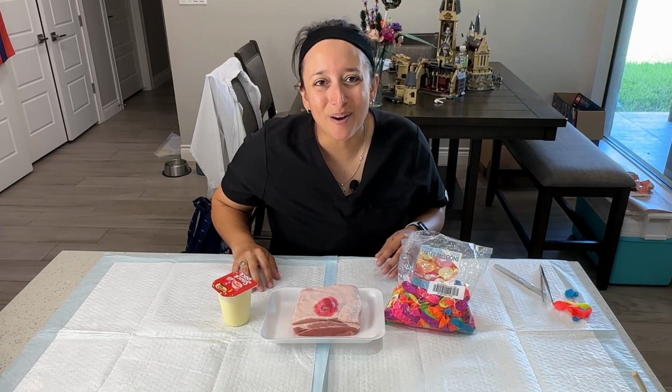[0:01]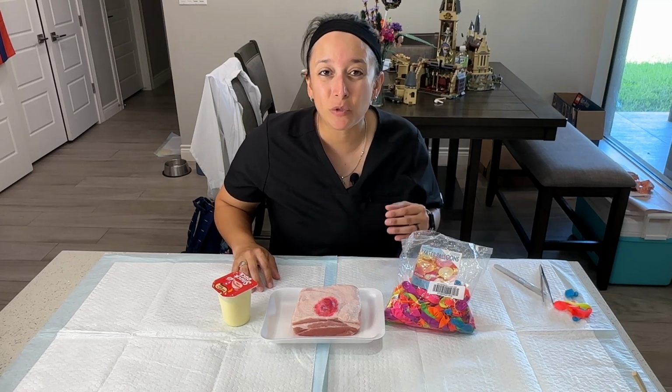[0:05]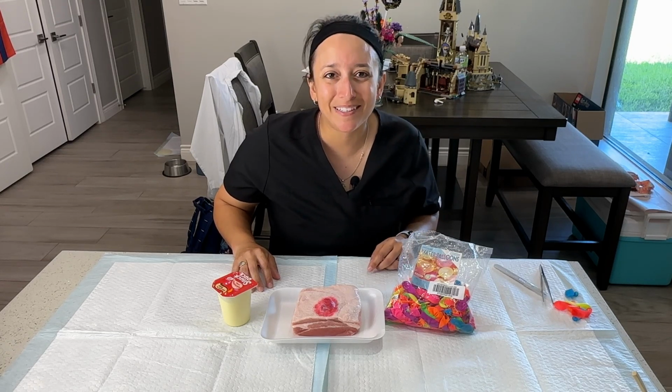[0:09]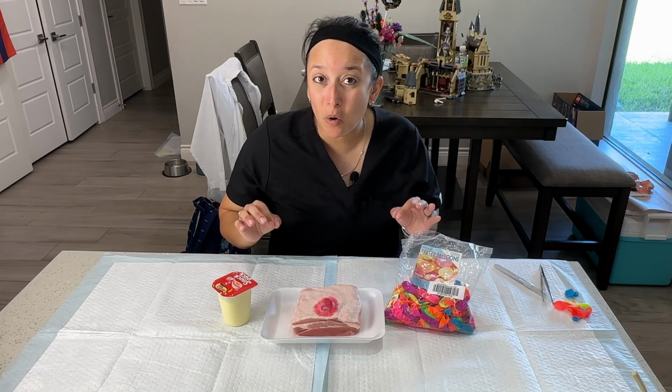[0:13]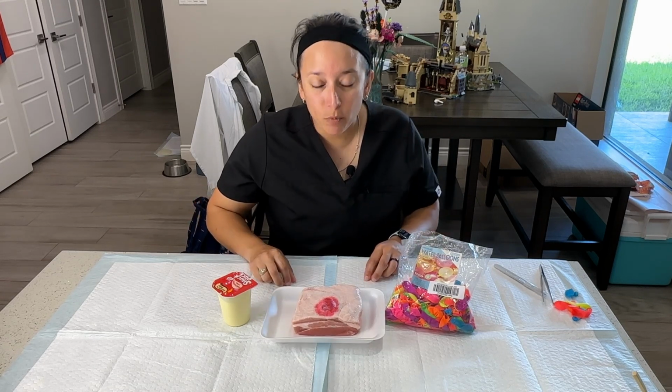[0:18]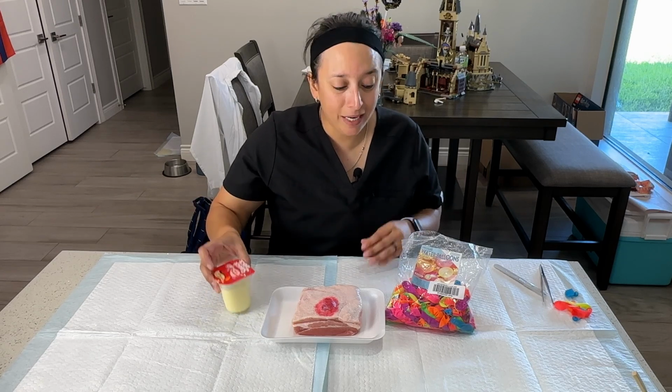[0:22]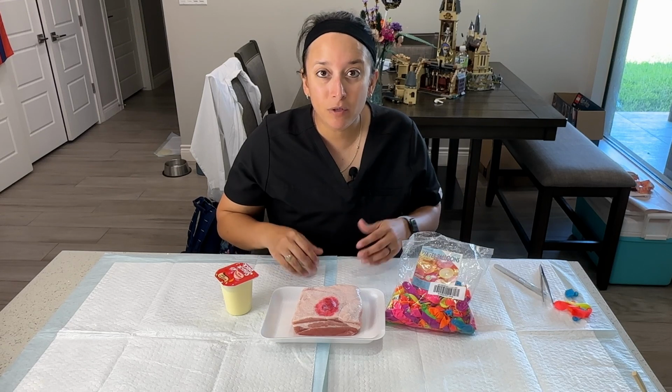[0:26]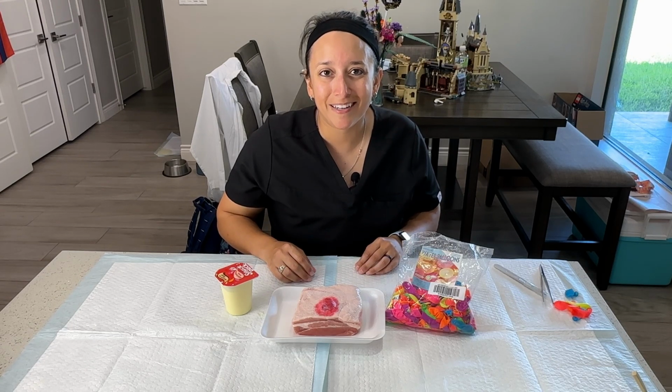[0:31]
Now, in today's video, we're gonna show you how to make your very own do-it-yourself abscess. And really all you need to do it is a pork skin, some pudding, some water balloons, a few other things that we'll show you. And you can essentially make one at home so you can practice your incision and drainage technique. So stay tuned and we'll show you how to do it yourself.
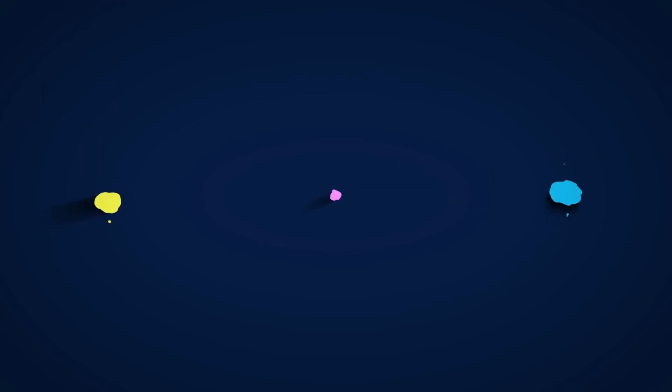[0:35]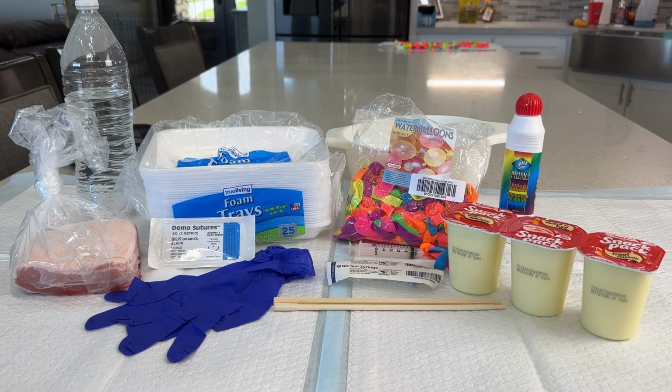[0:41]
All right, so the materials that you're gonna need to make your very own do-it-yourself abscess are going to be what we see here. So here on the left-hand side, we see the pig skin. This is what we're gonna need to act as our fake human. We have some water. That's what we're gonna be adding to the pudding to make pus. We need some gloves when we handle the pork product. We have some demo suture to close off the pocket we make in the pork skin.
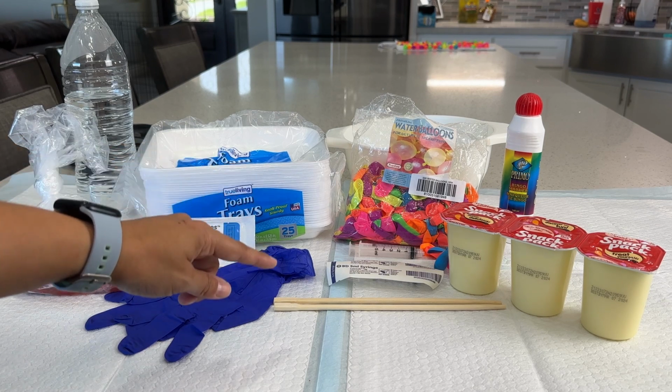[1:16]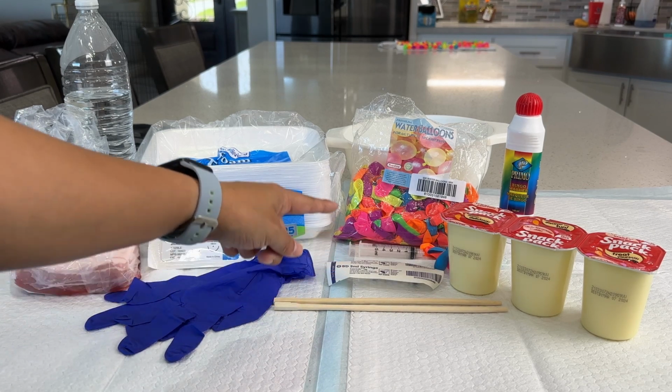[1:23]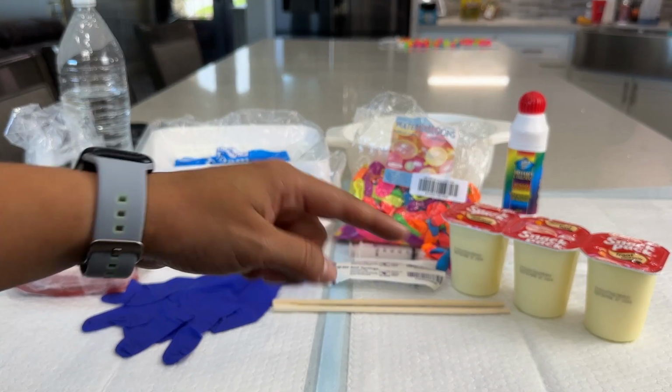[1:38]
We also have some foam trays. We have some items to stir the pudding once we thin it out a little bit. We have a 5cc syringe. We have some water balloons there, a colander in the back here, a bingo dauber, red. This is to make the abscess look more realistic. And last but not least, we have the snack pack vanilla, and that tends to resemble pus more. All right, so let's get into step one.
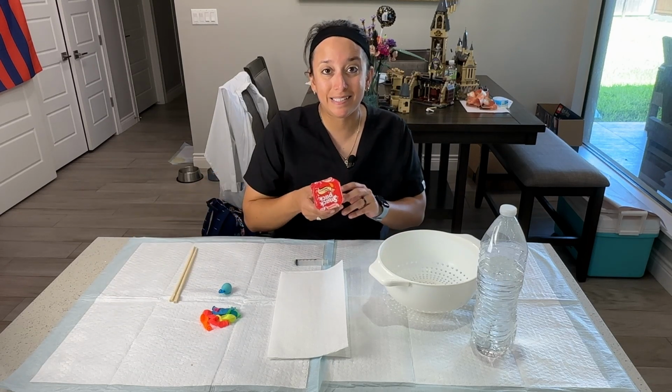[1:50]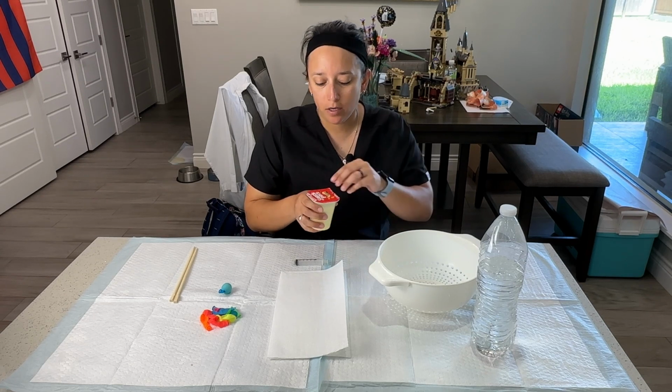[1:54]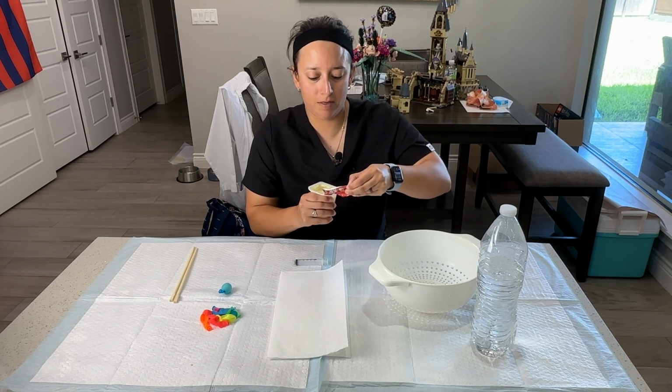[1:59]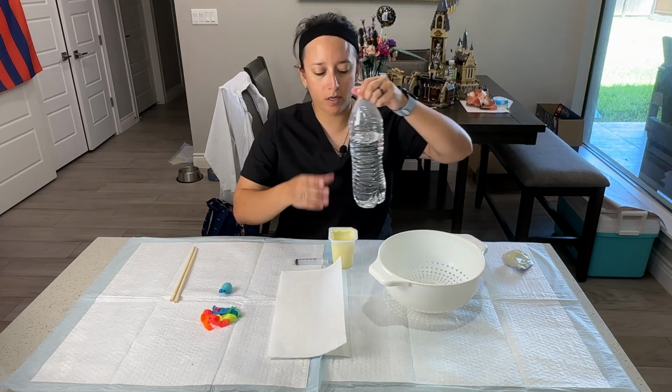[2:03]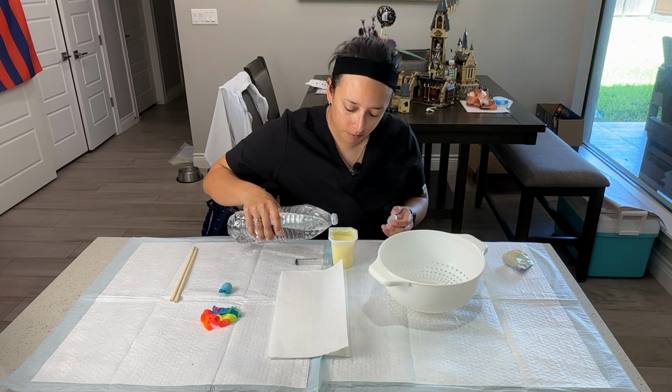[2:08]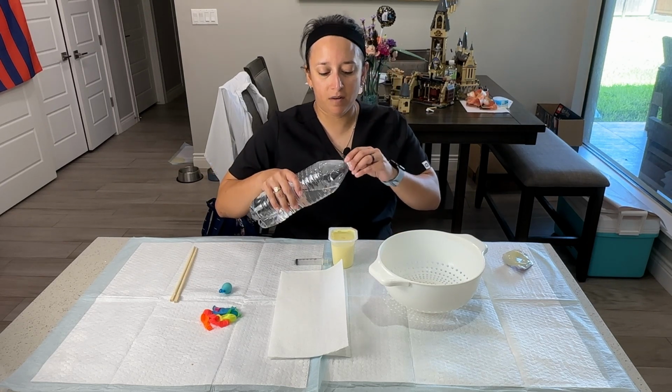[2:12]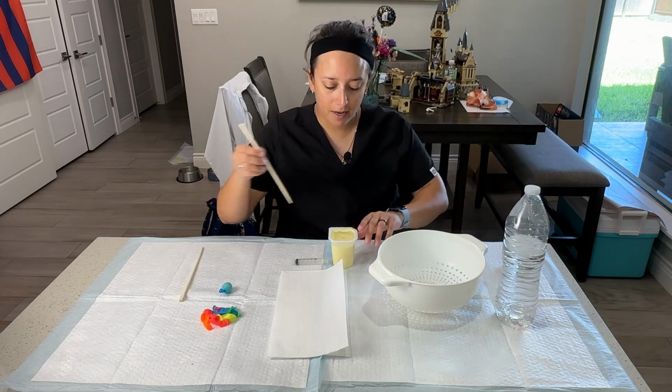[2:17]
All right, so one of the first steps that we need to do is take this snack pack and thin out the pudding that's inside. So I'm gonna go ahead and open this up. All right, I'm gonna set this aside. I'm gonna grab my water. This can be any water that you have laying around the house. And I'm gonna put a little bit in. Okay, I'm only gonna fill it up to just beneath the top because I don't want it to overflow when I start stirring it. Then I'm gonna go ahead and stir.
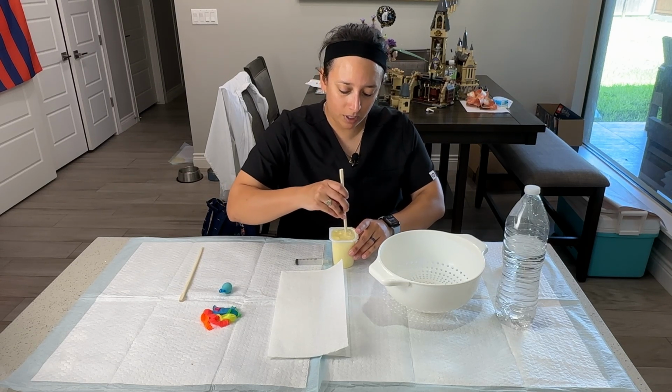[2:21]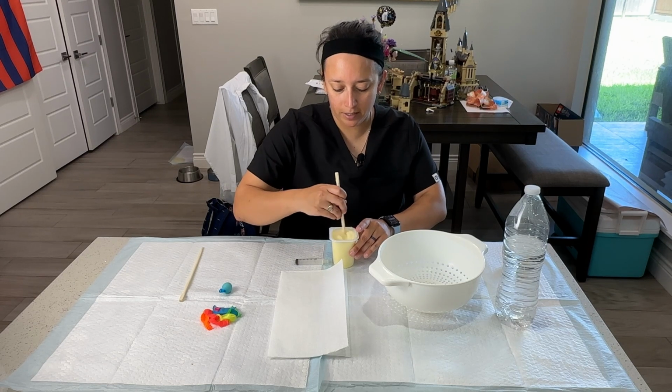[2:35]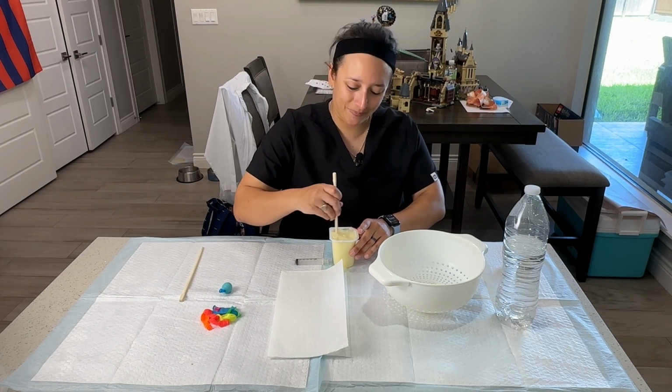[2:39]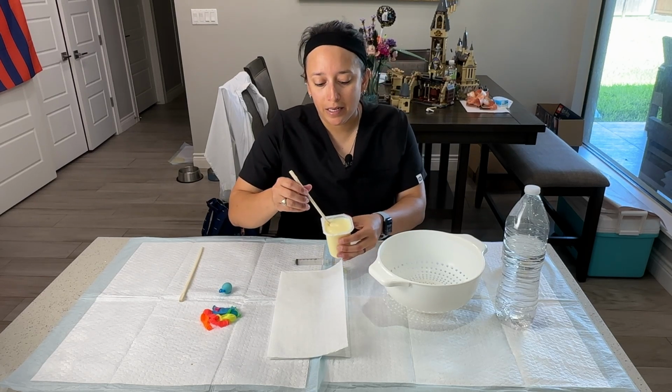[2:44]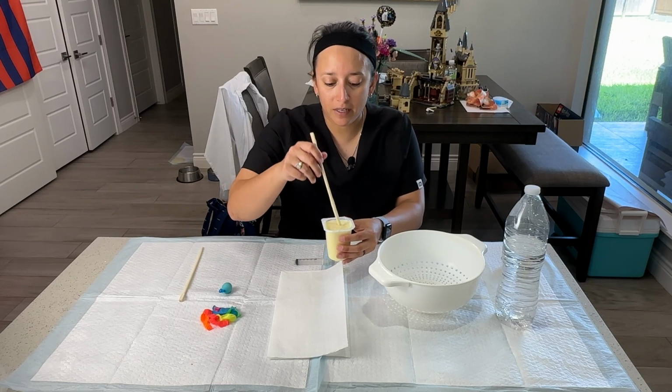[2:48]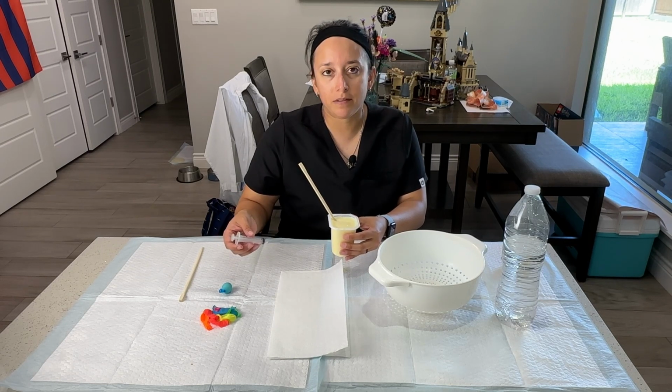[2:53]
And with this, I'm just trying to get the water and the pudding all nice and mixed up so that it resembles the texture of pus. So I'm gonna mix it until it is nice and pus-like. So once I'm done mixing, the consistency shouldn't be runny, but it also shouldn't be too thick so that it's easy to suck up into our syringe and place into the water balloon.
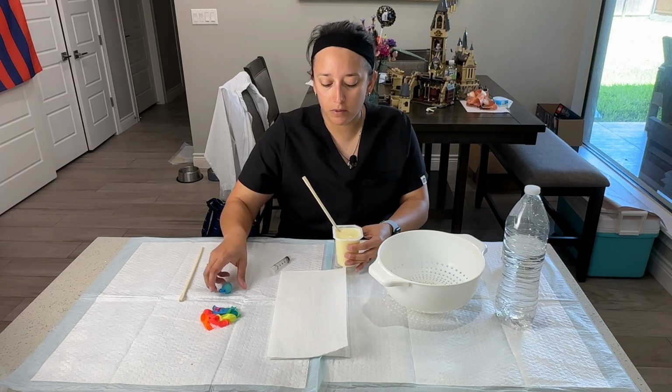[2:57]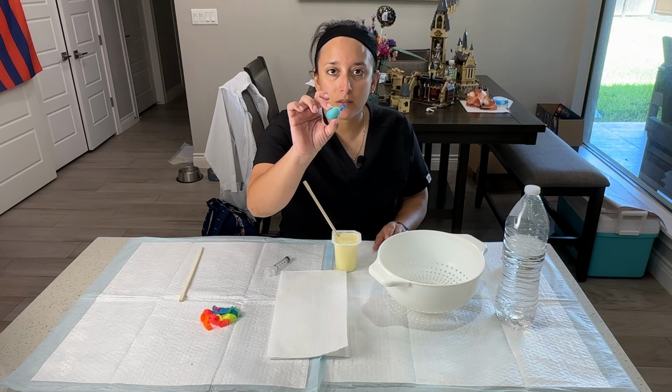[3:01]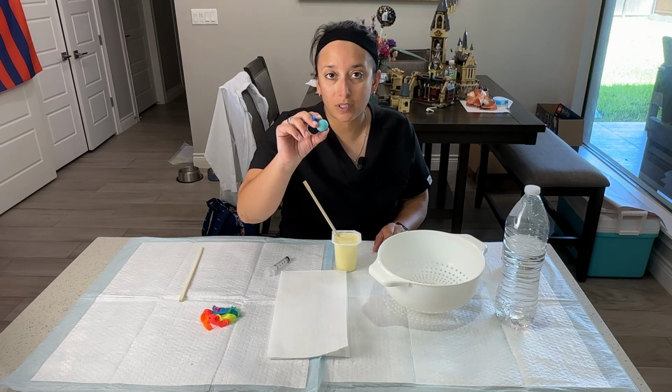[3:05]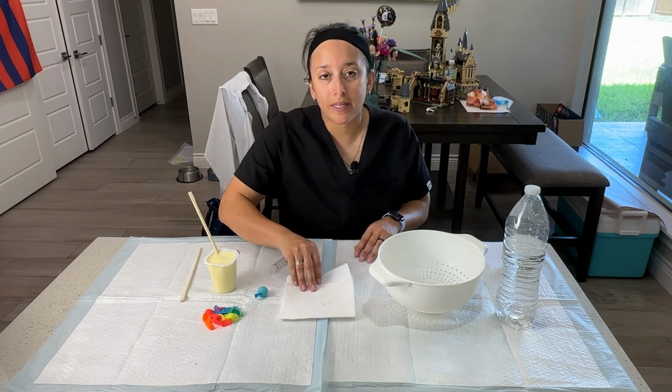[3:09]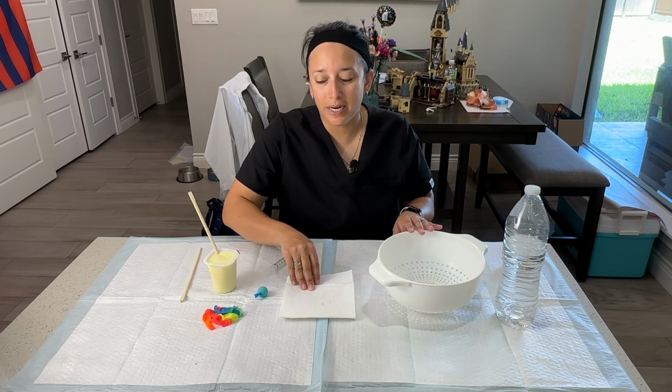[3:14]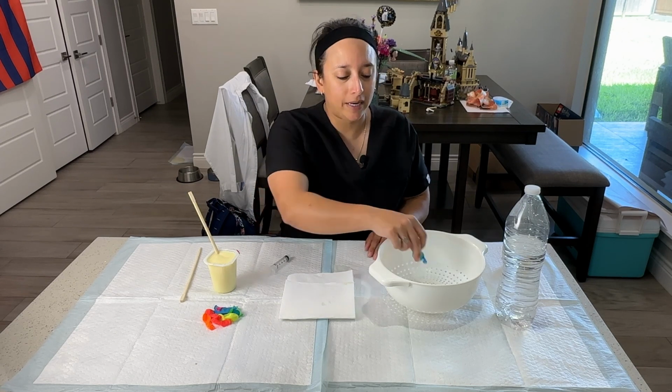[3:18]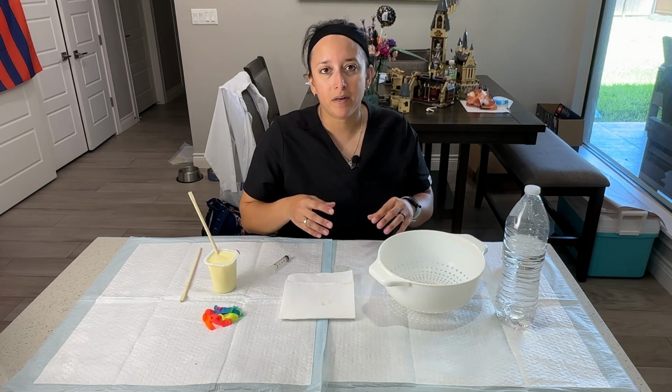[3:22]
So the next step, we're gonna go ahead and start filling up the water balloons. And when we do, and we tie it off, it'll look something like this, which resembles a little abscess that we'll be placing under the pork skin. Now, this next step can get a little messy, so I like to have plenty of paper towels handy. I also like to have my colander here close by so that when I'm done tying off my abscesses in the water balloons, I can place them in here to rinse off so that they don't stay sticky. And then from there, they'll be ready to place in under the skin.
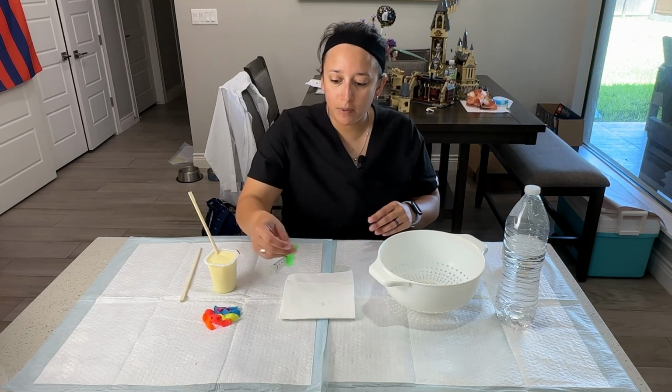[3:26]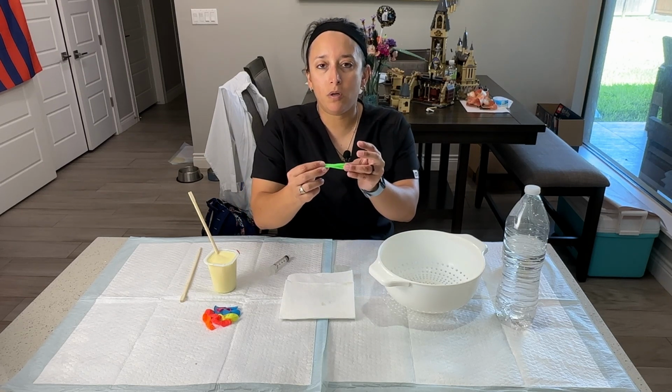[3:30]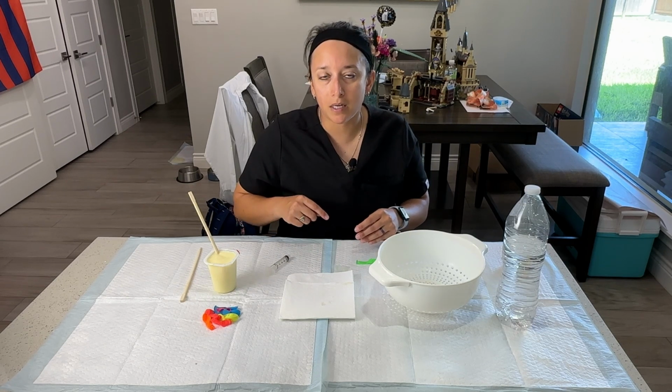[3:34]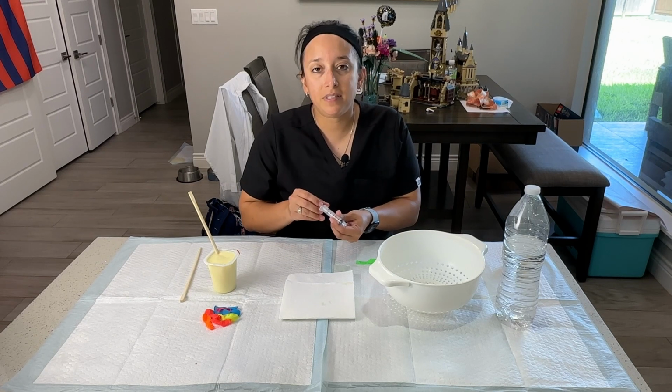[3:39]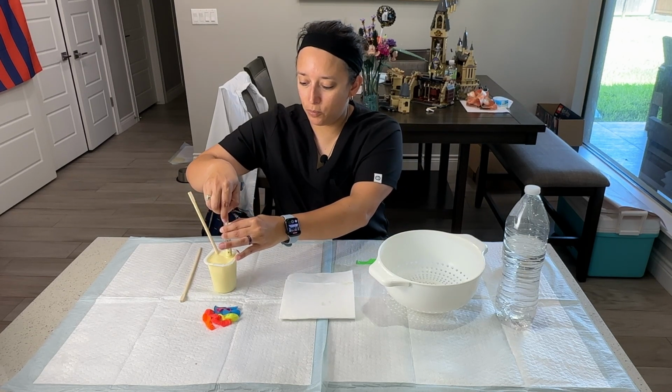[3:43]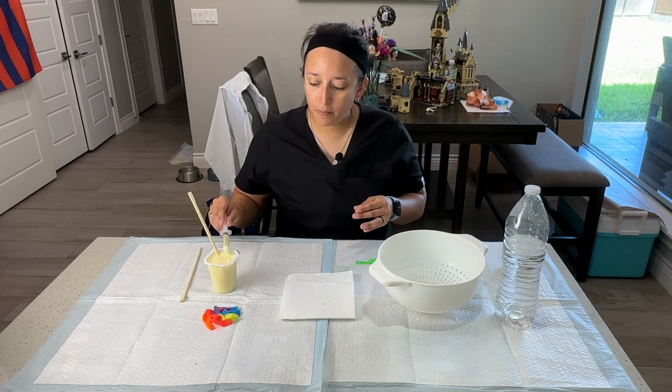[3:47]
So first thing I'm gonna do is take a balloon, a water balloon. It should be pretty small. It doesn't need to be that big. Just your standard water balloon. There'll be a link down below that you can purchase them from. I'll take my 5cc syringe. I'm gonna go ahead and suck up some of this pudding. It should go up pretty easily. I'm gonna tap off some of the excess.
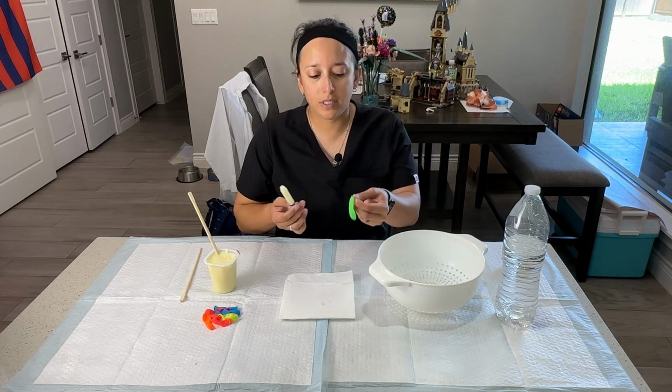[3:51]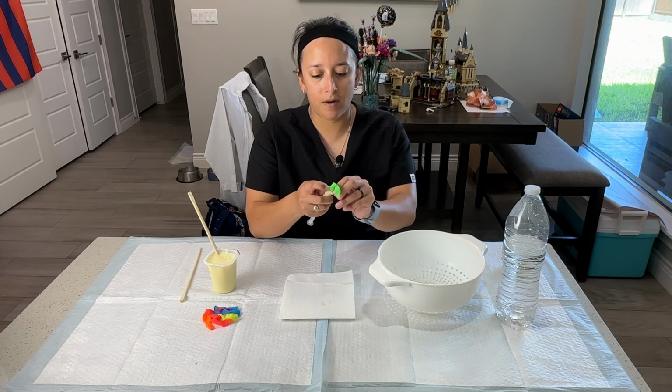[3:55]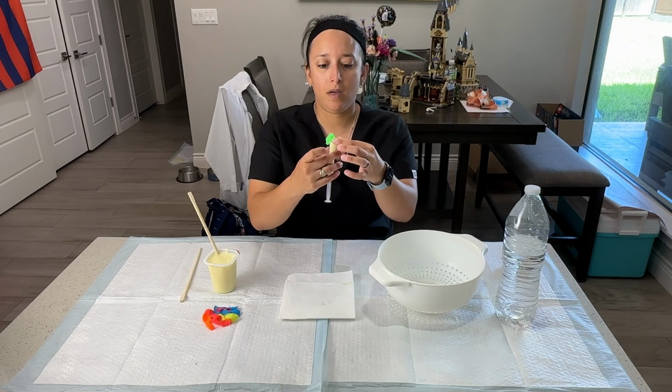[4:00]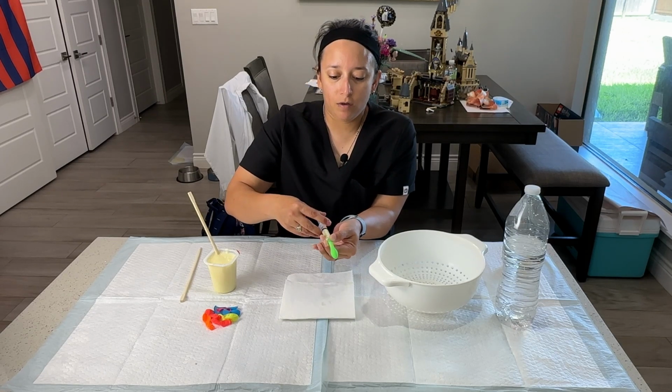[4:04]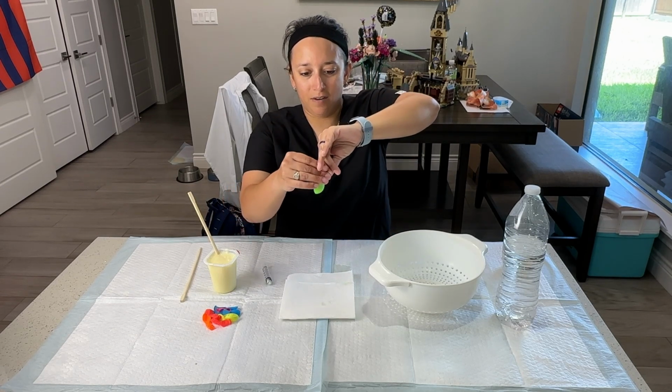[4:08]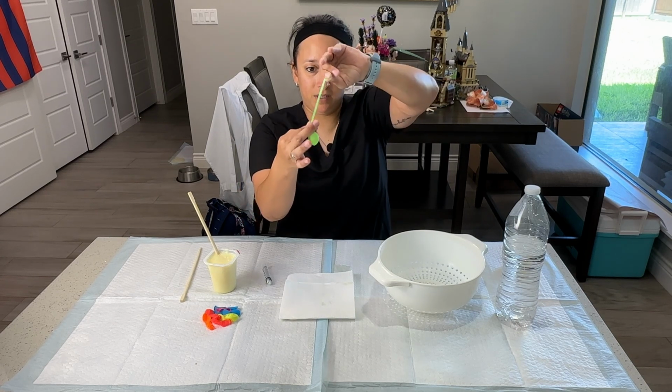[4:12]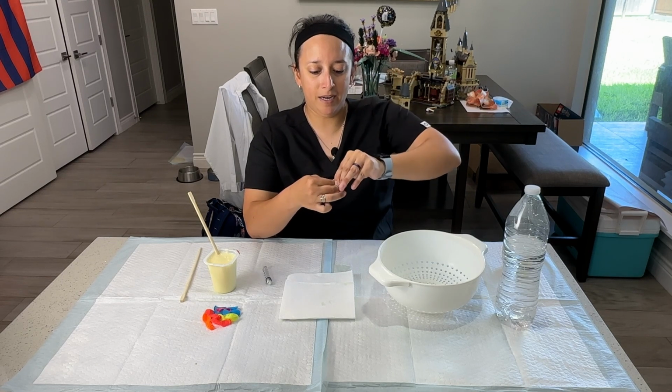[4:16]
Then what I'm gonna do is take this water balloon and I'm gonna put it over the whole tip of the syringe so that it covers everything. We'll see like that. I'm going to go ahead and pinch it here as I squeeze, and then I'm gonna tie it off like that. Gotta be kind of careful so it doesn't squeeze out on you. Then I'm gonna kind of milk it down a bit so that the liquid goes all to one point. I'm gonna wrap it and tie it.
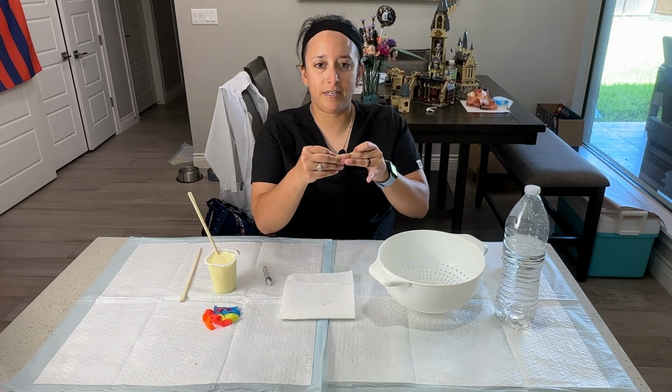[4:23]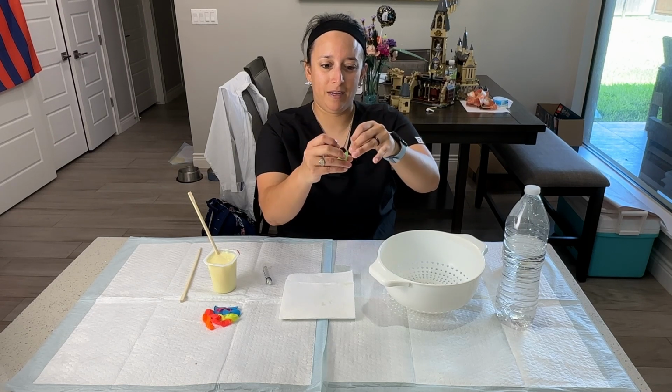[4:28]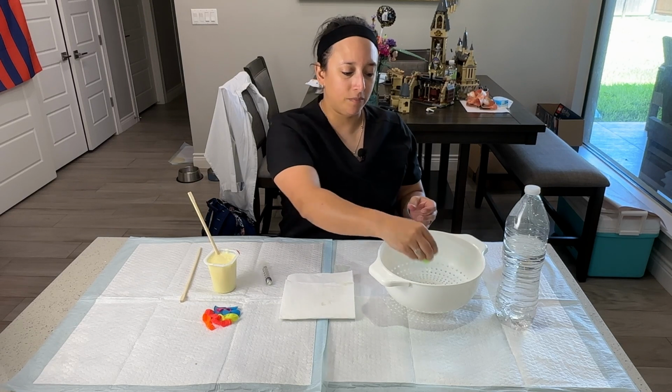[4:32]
Tie it off. And then I'm going to try to cinch the knot down further towards the abscess so that the liquid all stays in one place. And once I do that, I have a nice abscess there and I'm done. I can place it in here.
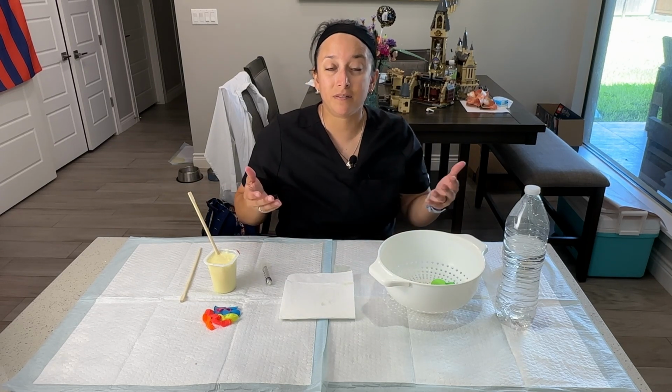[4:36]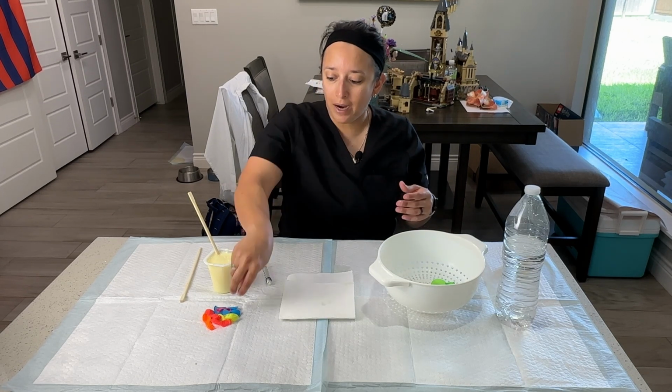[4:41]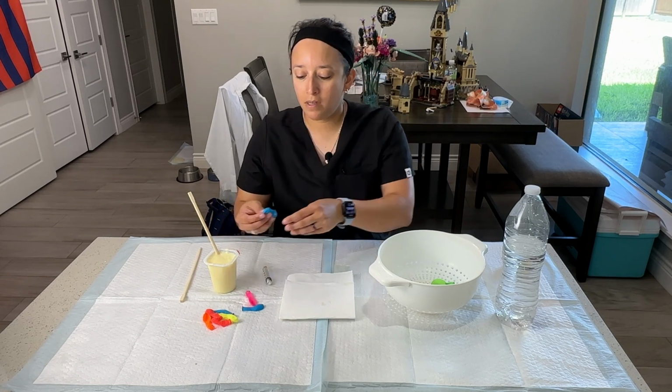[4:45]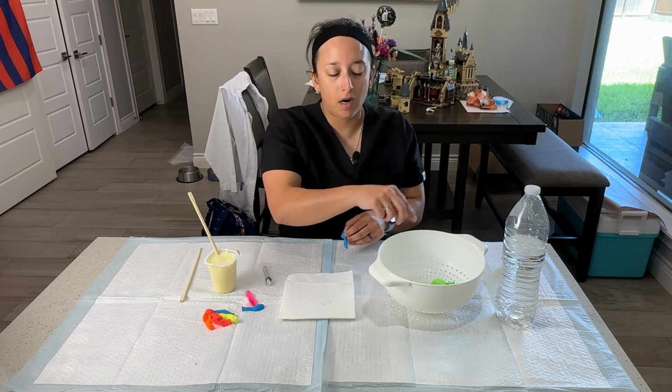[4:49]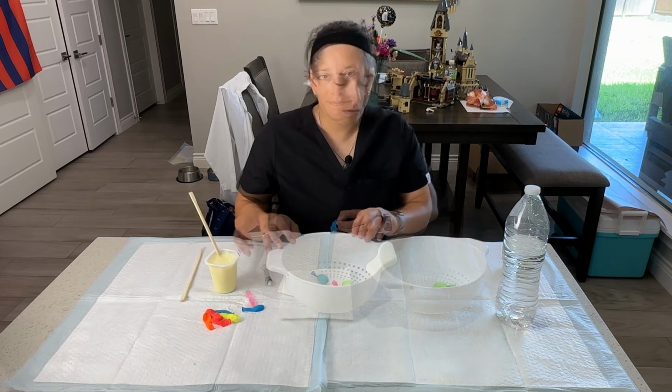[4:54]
And if I'm making multiple abscesses at the same time, for instance, for my students at school, I have to make over 100 of these. So I will continue filling. And if you're curious, one of these puddings can fill up about 25 of the little abscesses. So it's pretty efficient.
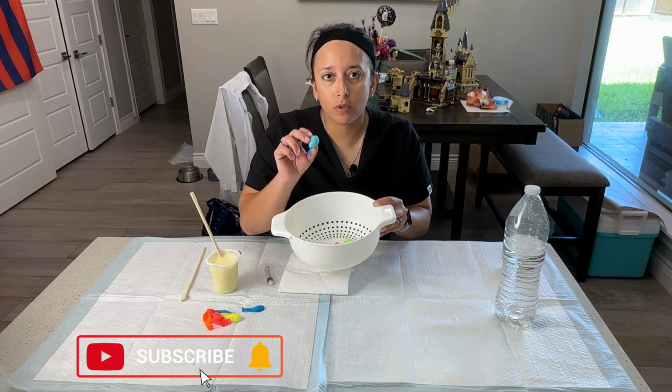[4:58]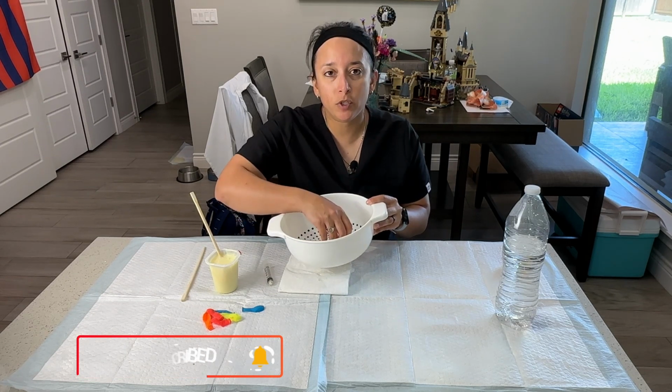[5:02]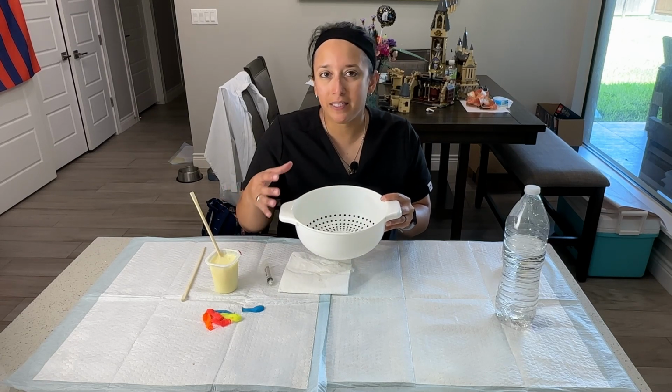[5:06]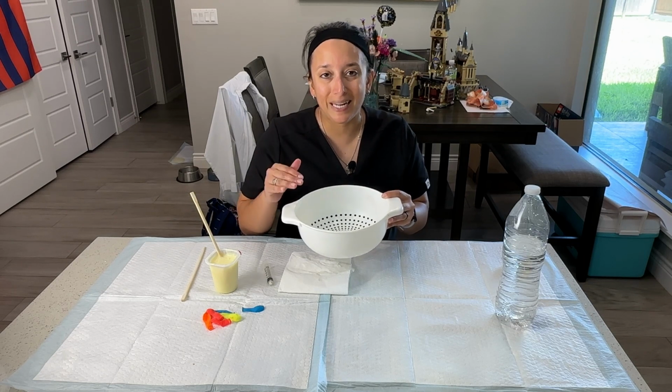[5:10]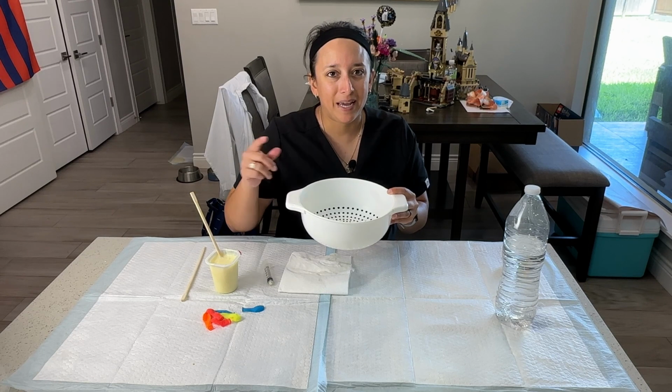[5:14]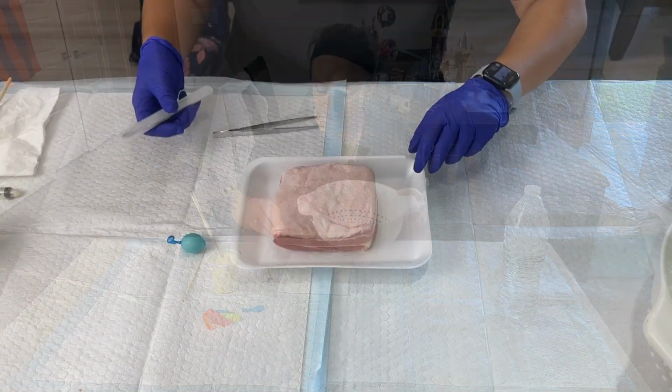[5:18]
Once I've finished filling several of these little water balloons with the pudding mix, I will take them to the sink and give them a good rinse so that they're not too sticky, especially if I'm going to be making these in bulk. And then I will store them until I'm ready to implant them underneath our pork skin. Let's go ahead and move on from that step and move on to inserting it underneath the pig skin.
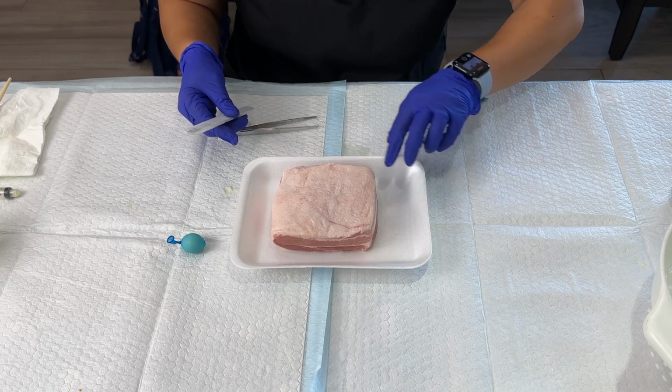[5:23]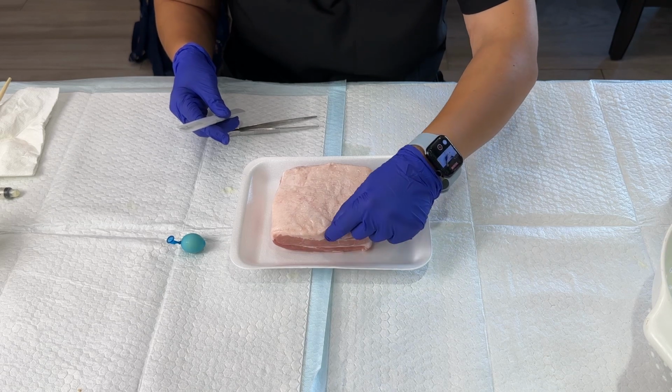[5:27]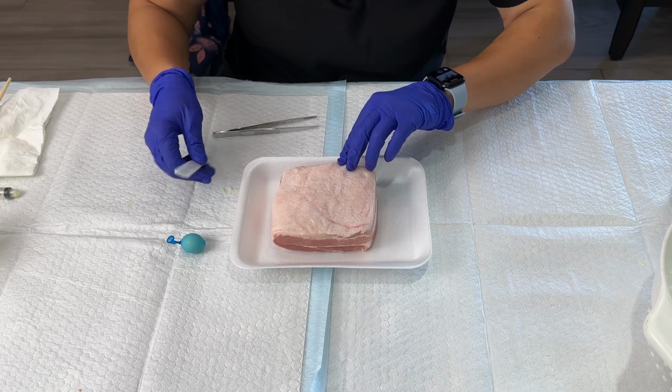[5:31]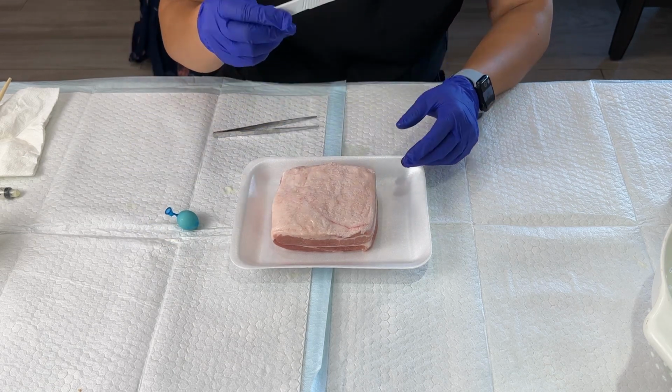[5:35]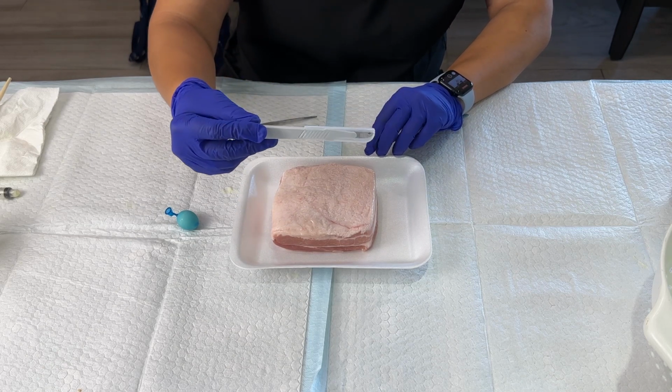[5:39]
All right, so for the next part of this procedure, we're going to have to make a small slit here between the skin and the pork belly so that we can insert our abscess. And so I'm going to start from my side here. I did fail to mention earlier, you will need a scalpel. Any size blade will work. And then it also helps to have some forceps of some kind.
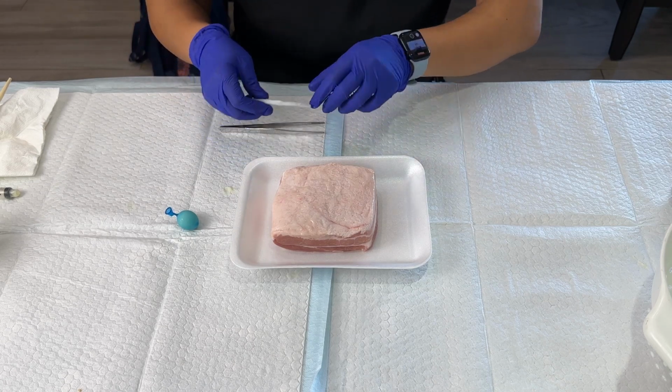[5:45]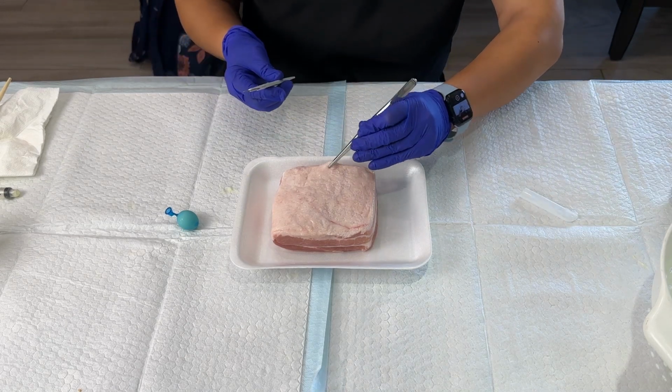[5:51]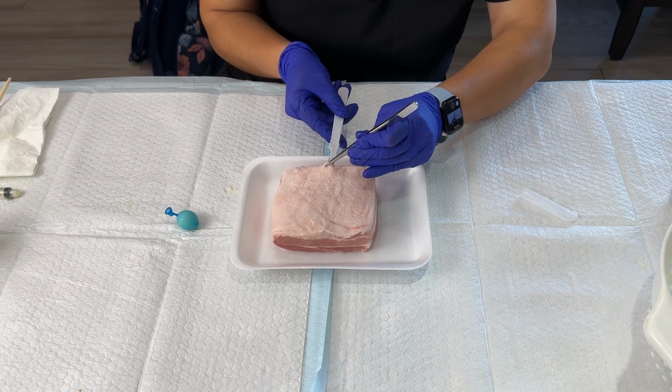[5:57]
So what I like to do, of course, using safety, is pick up the edge of the dermis. So it'd be right here. You can see where the skin layers change. And you're going to slide your scalpel underneath, creating a bit of a tunnel. You don't want to create too big of a hole for the abscess, because then it slides around and it's hard to use.
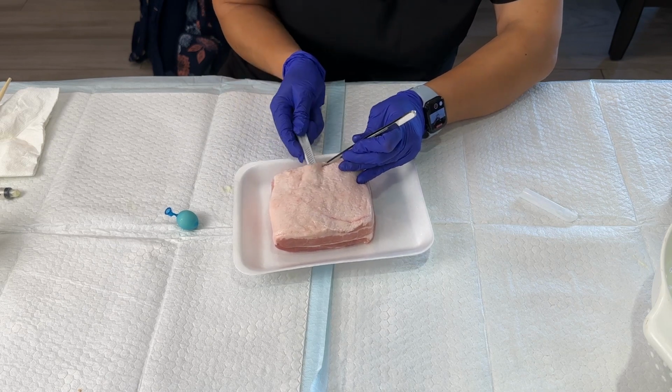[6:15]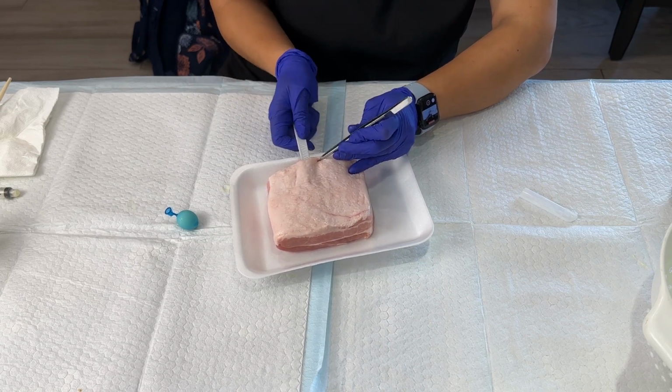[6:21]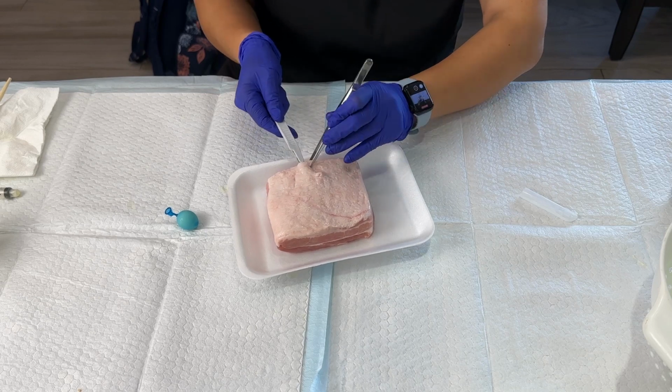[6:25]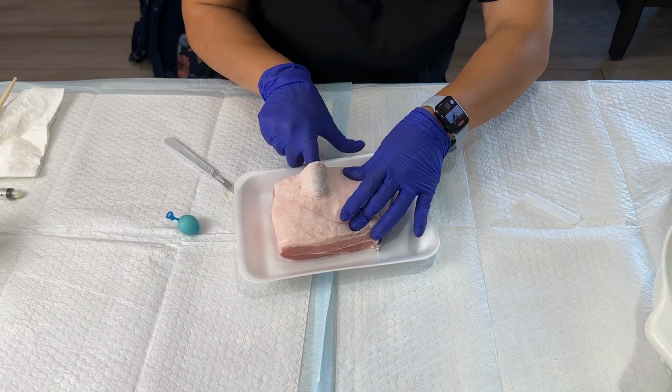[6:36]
But you do want to create enough of a space that it will fit in there and it will work like we want it to. So I'm just getting in there with my scalpel and separating those layers so that I can insert my abscess. Okay, so you'll want to do that until you feel like you have a good pocket. And then I like to insert my finger and feel what I have. You can see that I'm right underneath the skin.
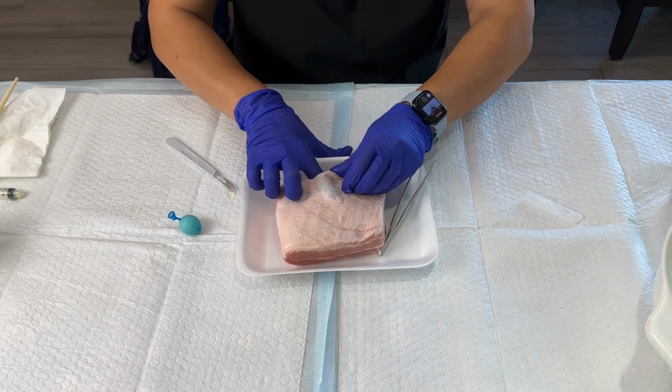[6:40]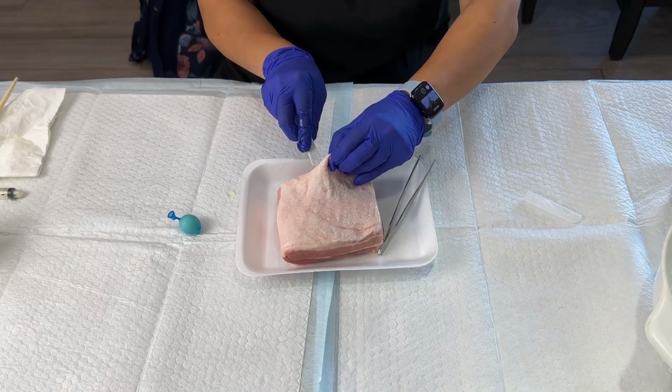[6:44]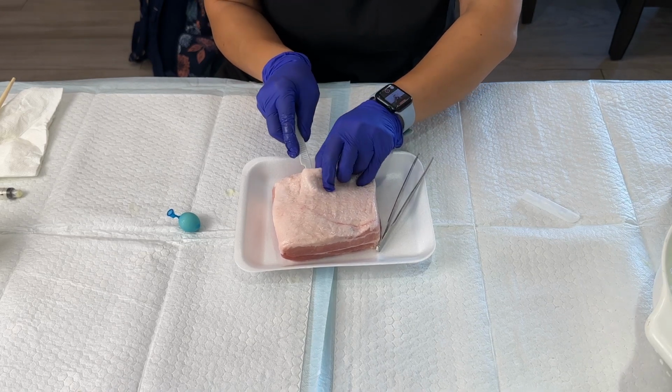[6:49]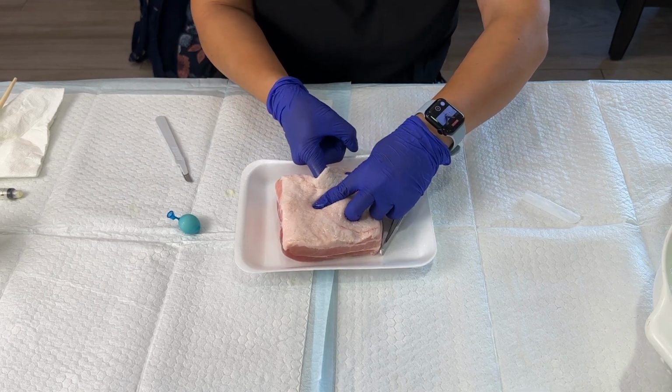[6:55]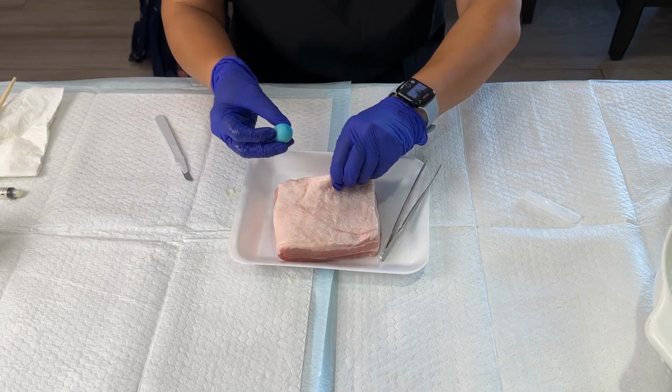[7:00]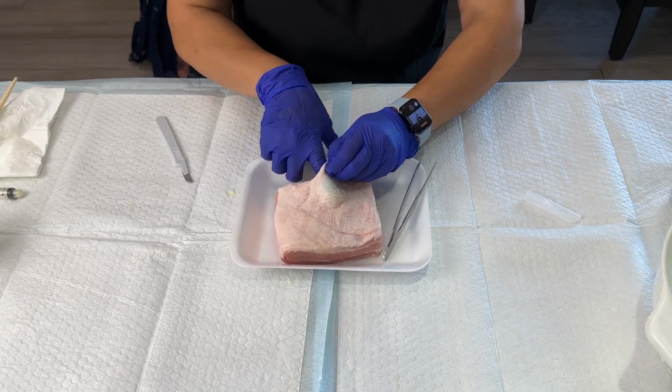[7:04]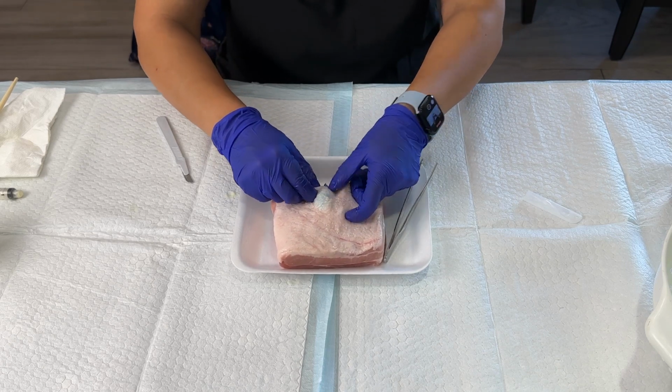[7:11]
And I don't think I have quite a big enough hole yet, so I'm going to stick my scalpel back in. Be careful not to puncture through the skin itself, because then it'll defeat the purpose. I'm just trying to make sure I have a little pocket or a little hole to stick my abscess in. Okay. Now, once I think I have the right size hole, I'll get my abscess and try to stick it in there underneath the skin, see if I can get it to follow that track in there.
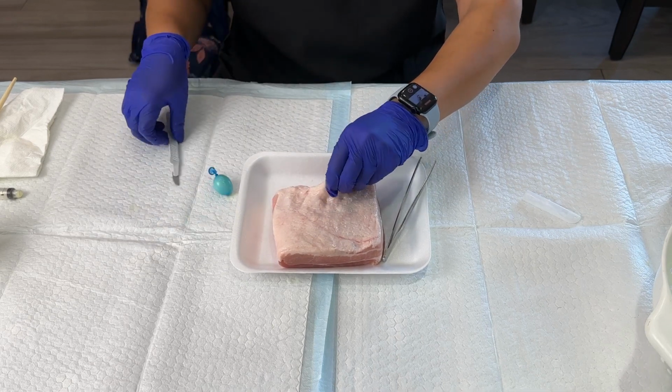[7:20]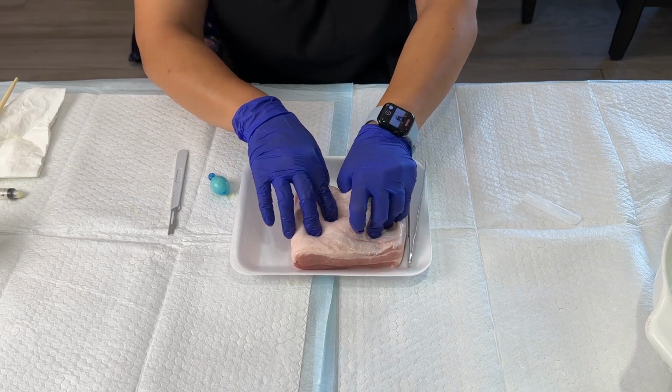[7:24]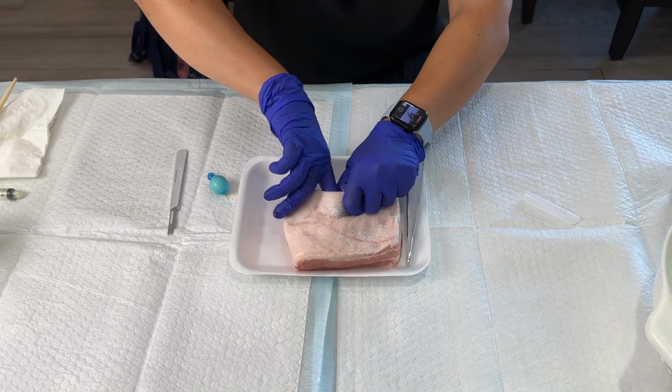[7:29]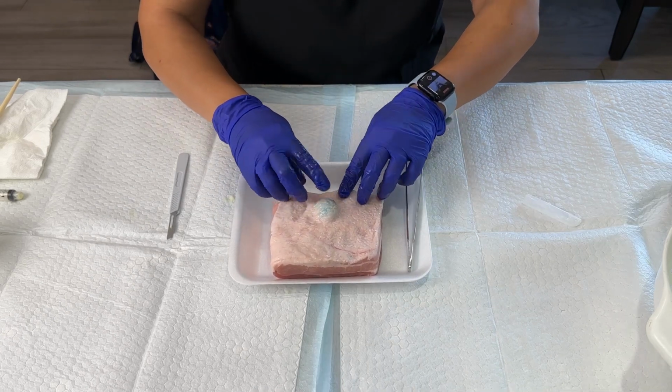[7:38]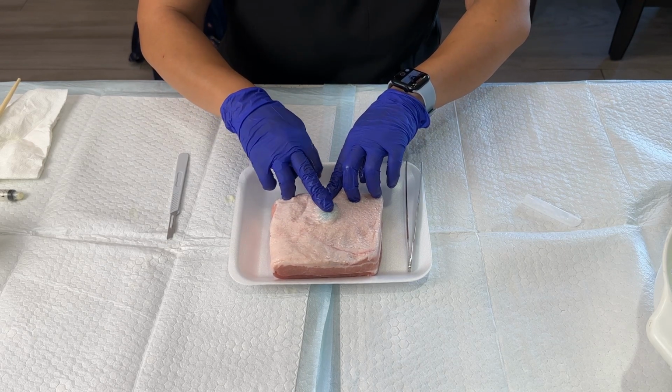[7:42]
So as you can see, it stops here. I think I need to make a little bit bigger space here, so I'll remove it and go in there and try to make the pocket a little bit bigger. I can do that with blunt dissection, or I can do it with my scalpel. Try that again, sliding it in, and it does a pretty good job there. It's where I want it to be, underneath that skin, and I think I'm ready to move on to the next step.
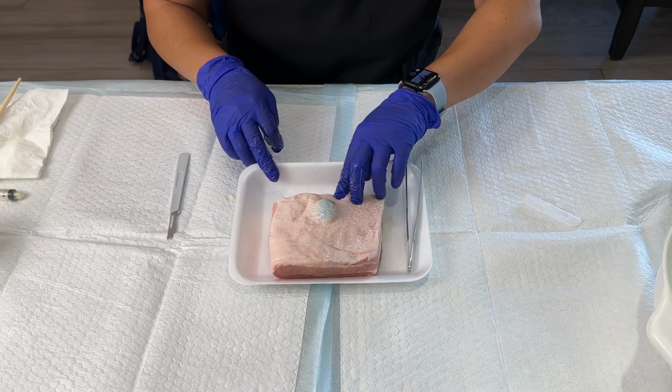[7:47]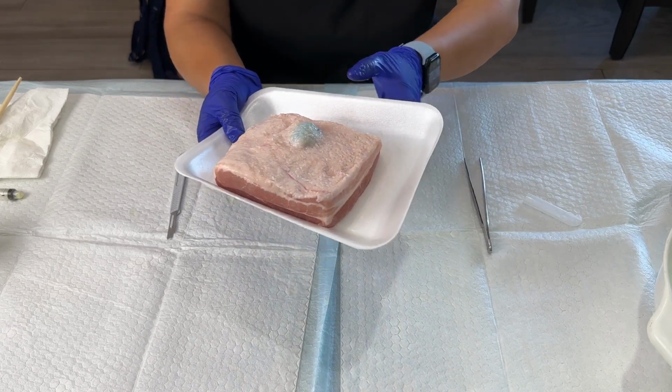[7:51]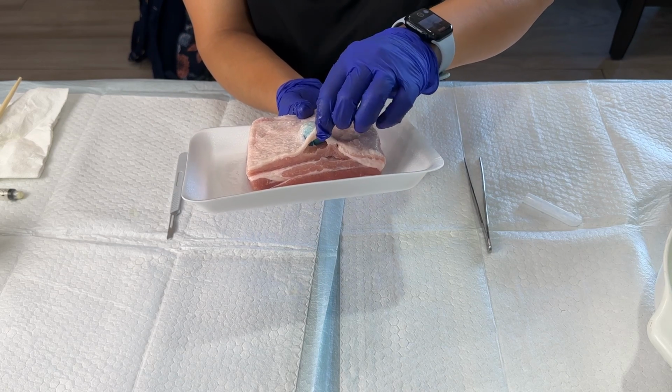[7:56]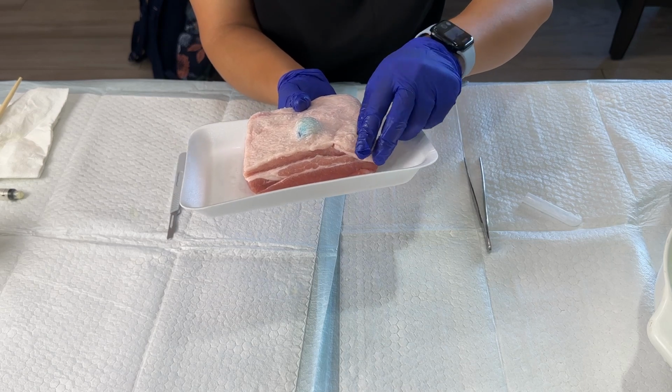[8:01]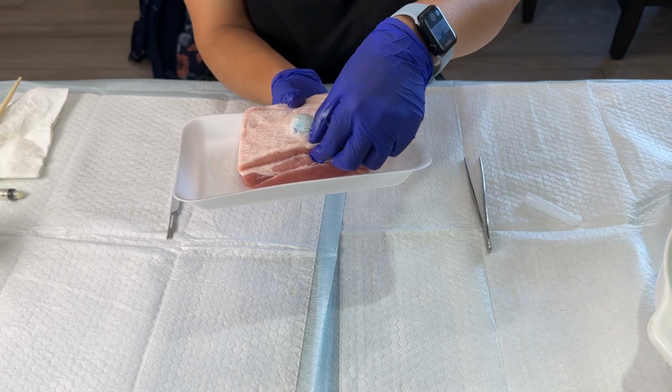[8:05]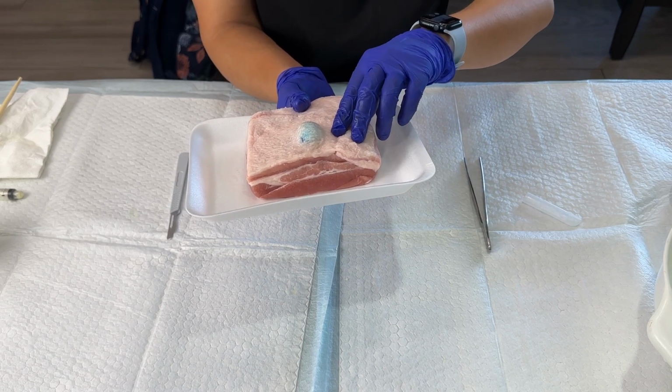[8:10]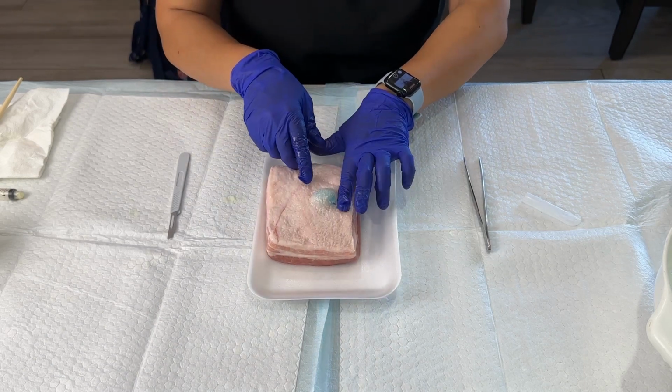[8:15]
So once I have my abscess underneath the skin, you can see on this side where I created that tunnel, that there's a little bit of a way that the abscess could slide out if we're applying pressure to it. So there's really two ways to take care of this. One would be that I could put some stitches here to keep this skin down. If you have access to suture material, that's ideal. If not, what I would do when I instruct my students to cut this open is to apply some pressure here so that it doesn't slide back out the tunnel that I made for it.
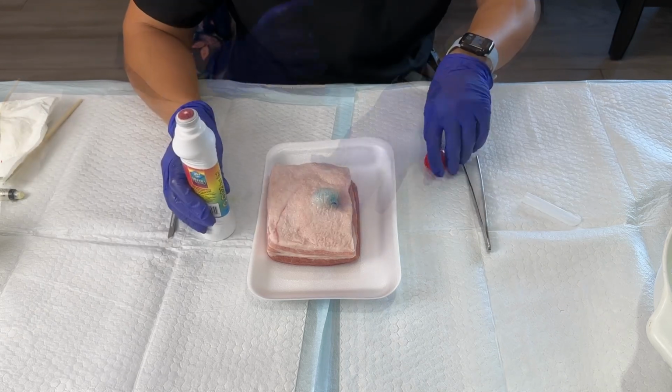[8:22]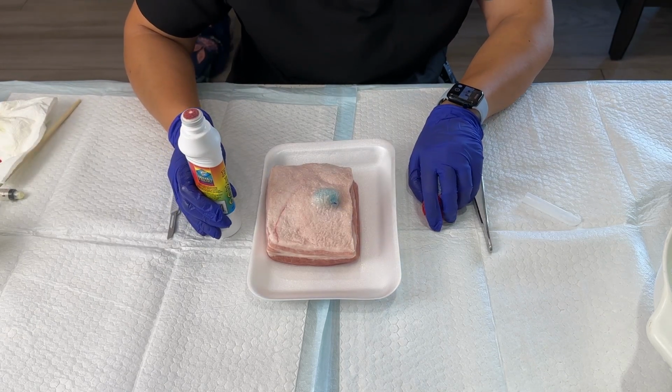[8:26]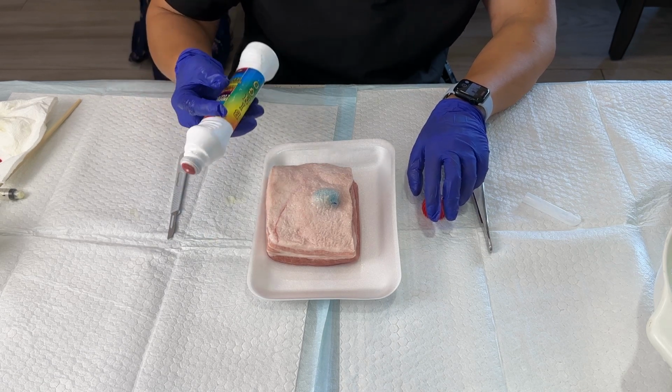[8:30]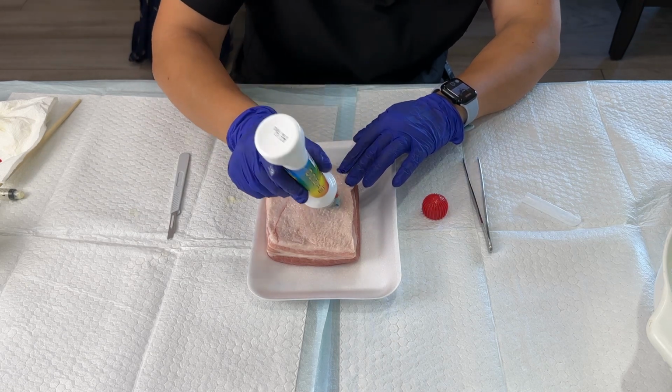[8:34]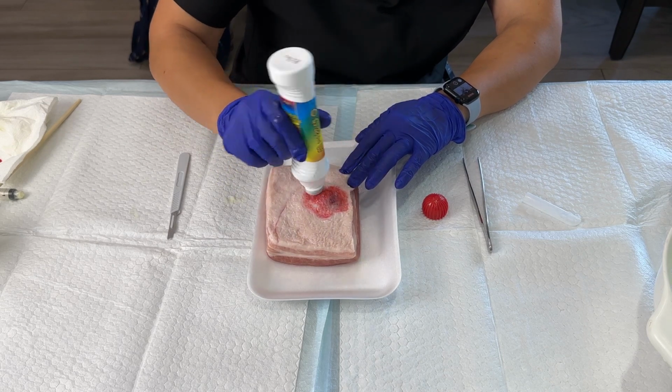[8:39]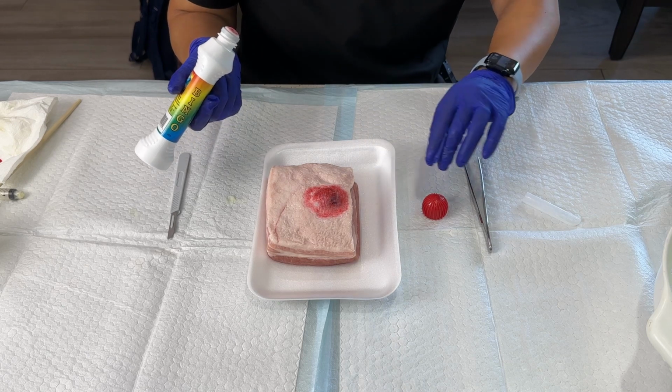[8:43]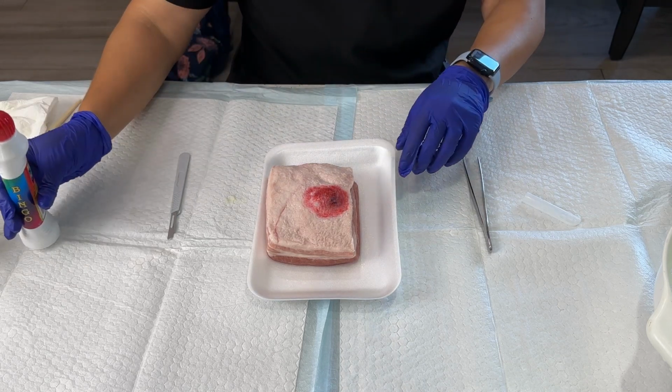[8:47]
Now, last but not least, the cherry on top to try to make this appear more realistic to your students or to yourself, is to add a little bit of redness. You can do that with a bingo dotter. I like to add a little bit of redness around it and add some realistic touch because most of the time when we see these abscesses in the clinic or in the emergency department, they are red and inflamed and tender.
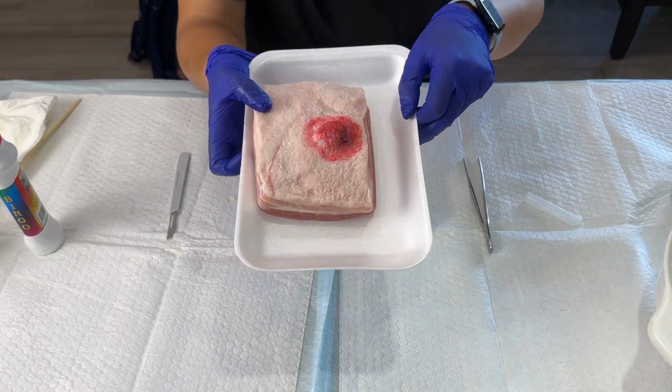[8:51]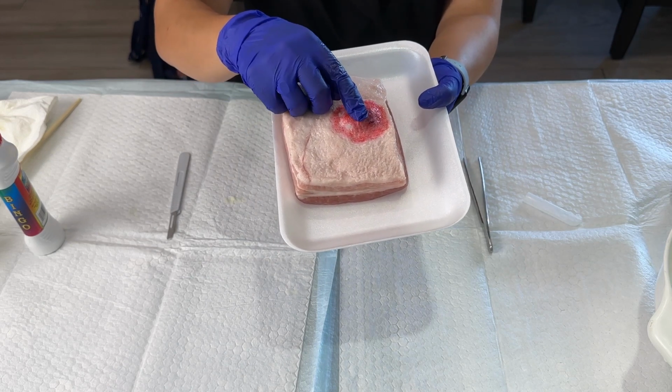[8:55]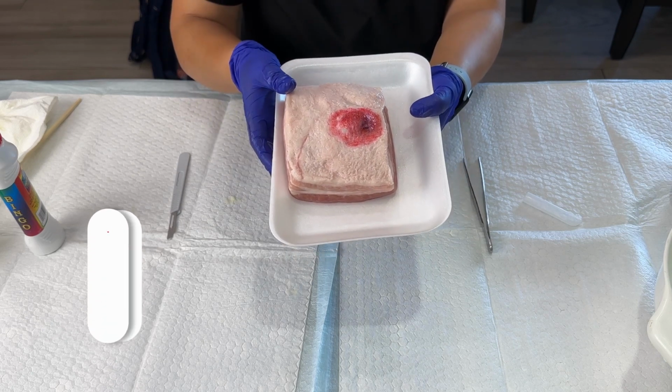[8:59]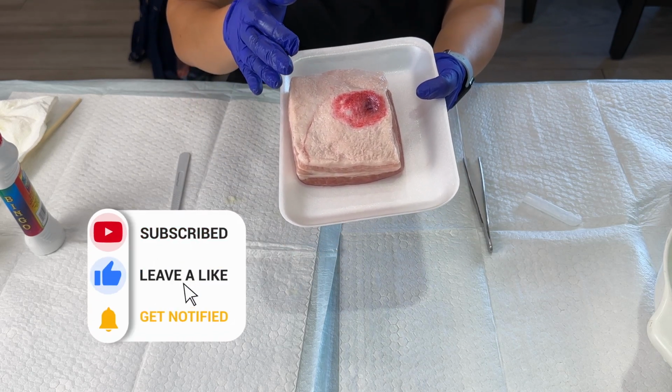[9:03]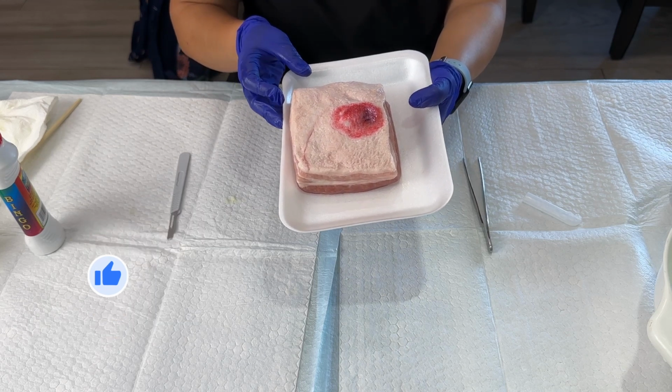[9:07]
And so there you go. Some nice abscess here, very fluctuant. You can also practice feeling what fluctuance feels like. And in my next video, we'll go ahead and show you a demonstration of the abscess I&D. So stick around.